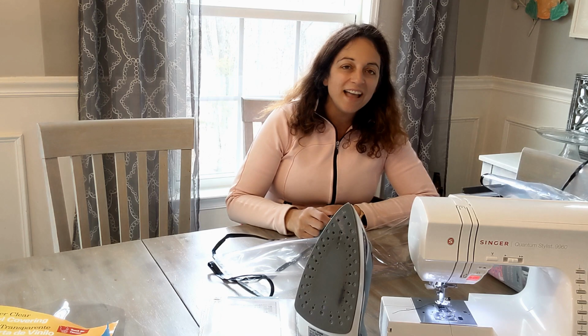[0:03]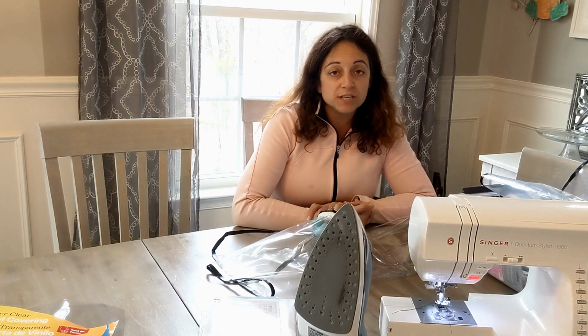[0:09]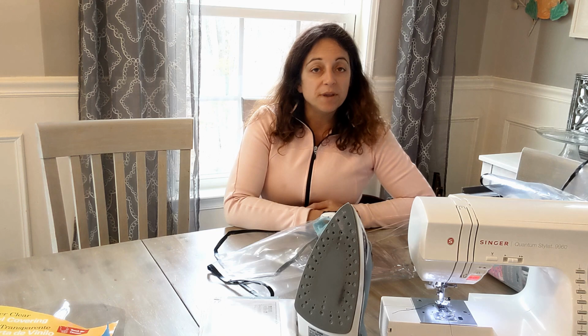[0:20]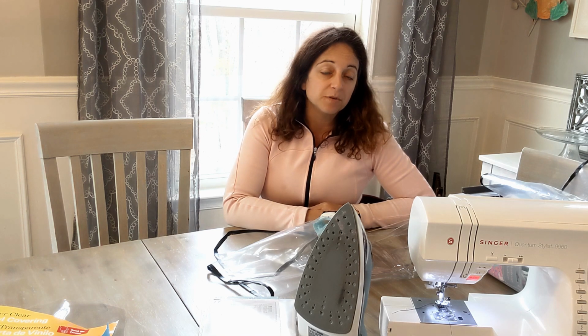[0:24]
Now, I am working on another video about homemade personal protective equipment in general because there is a lot of risk in making gear for people at home. And personal protective equipment is not as simple as just tying a bandana around your face or making a cotton mask to cover your face. It's not so much about how things look, but about how they perform.
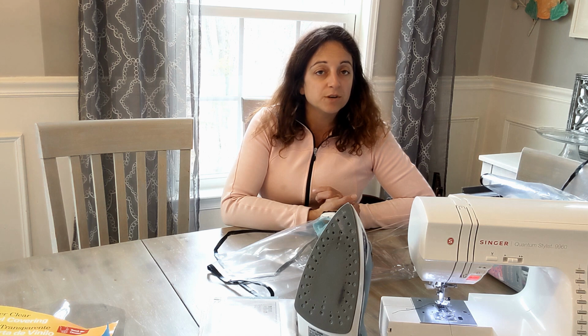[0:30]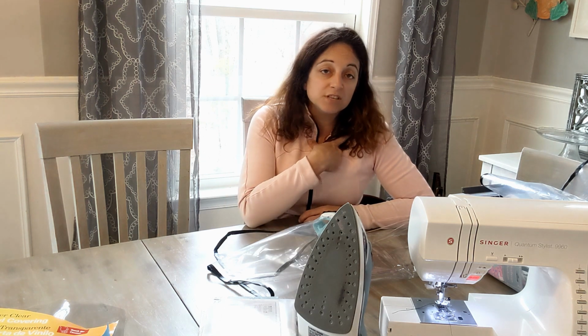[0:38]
So there are so many people with really big hearts who are making tons and tons of materials for healthcare workers and for people affected by the COVID virus. I myself worked for about 8 days trying to make a better designed mask that would actually create a seal around the face. So you can check out my tutorial on that. But I am in no way recommending any of this.
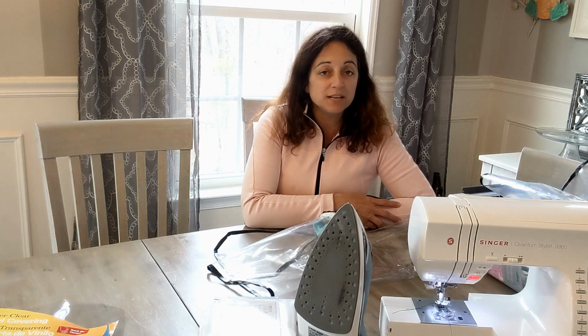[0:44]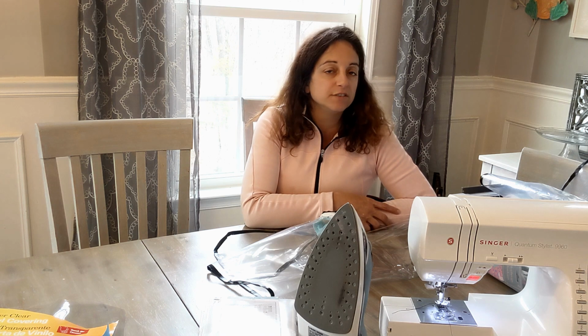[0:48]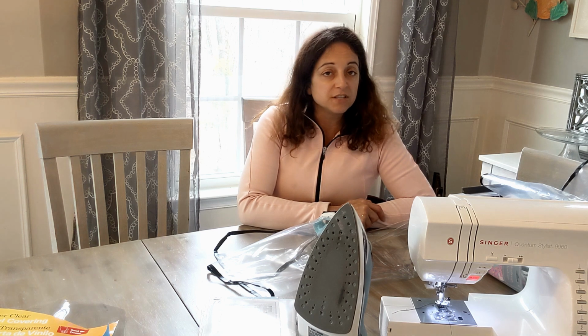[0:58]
As a pediatrician, I am no expert in personal protective equipment. I've worn it, I have never designed it, I don't have a degree in it. There are people who have PhDs in making personal protective gear for healthcare workers. Those are the people who design this equipment. It's made in factories from OSHA compliant materials, and it's really not something that I came up with in my kitchen or in my sewing room.
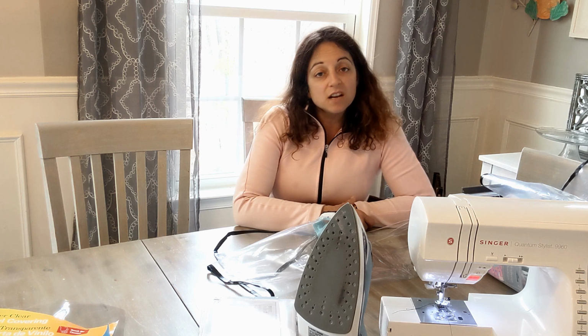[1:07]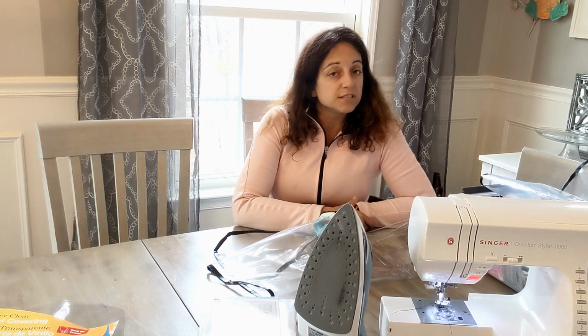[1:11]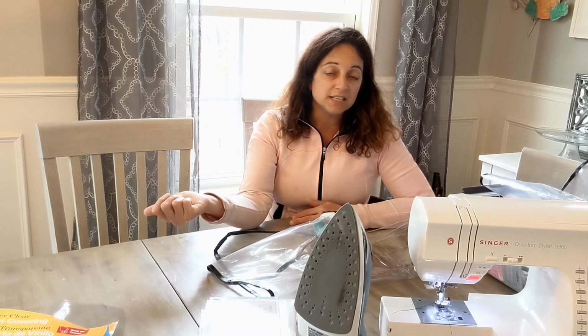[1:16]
So the mask idea was very complicated, and I am not 100% sure it's gonna work. I really have no way of testing it or knowing. I think it's better than what some of the other stuff is that's being made, but I can't say that for sure. In sharing my ideas with you guys, these are just ideas. This is not medical advice.
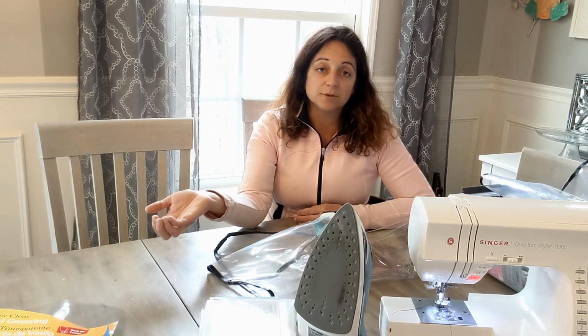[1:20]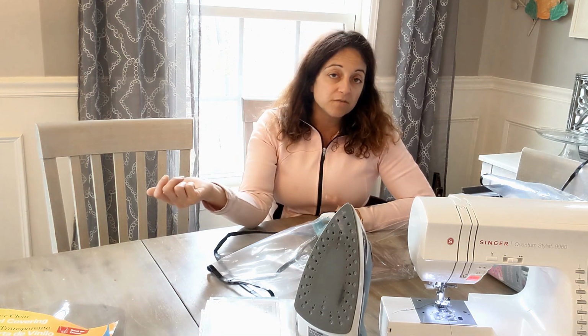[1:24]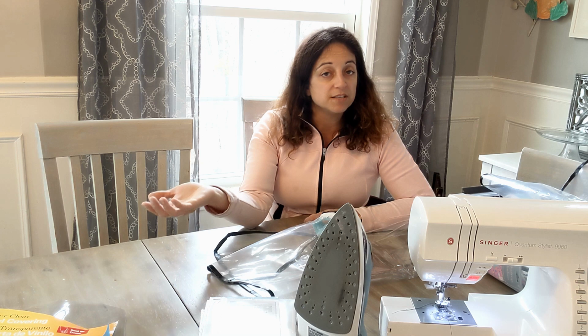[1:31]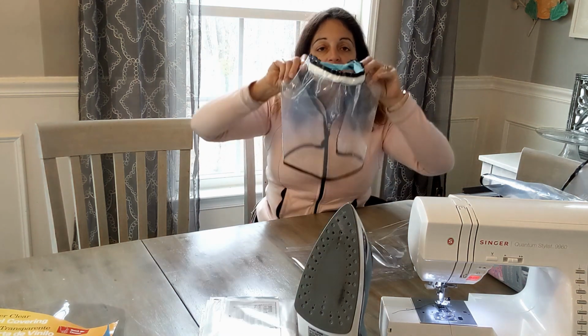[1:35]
I'm not saying this is gonna protect you. I'm not saying this is better than nothing because I don't know. Maybe you're better off with nothing. Who knows? You have to use your own judgment there. But there are people begging for people to make materials, and so I tried to come up with a slightly better design. So what I made here is a face shield.
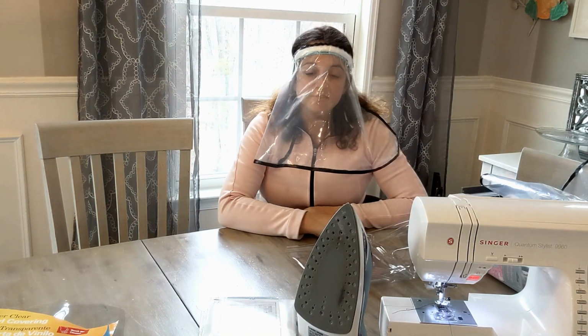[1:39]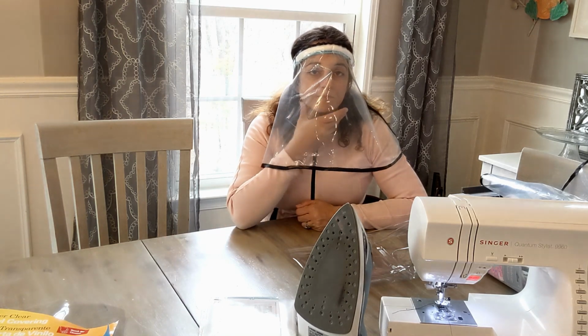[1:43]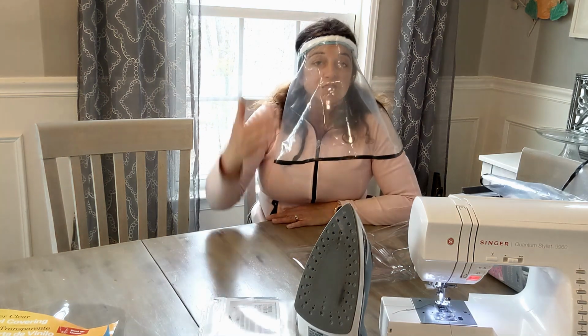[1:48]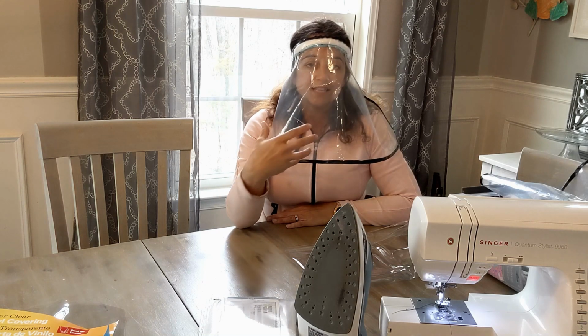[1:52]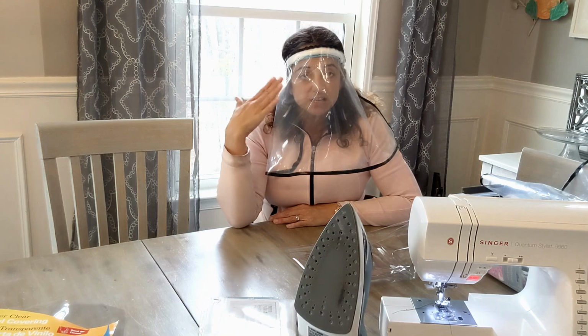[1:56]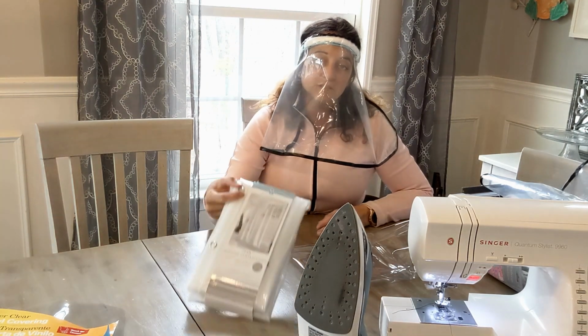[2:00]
The reason I chose to make a face shield is because so many people are making masks, and these masks are fabric, and that basically can act as a sponge and just kind of soak in all those germs. So we need something to block those droplets from the patients from the healthcare worker's face. So hopefully I would have a mask and goggles on underneath this, but this is just gonna add one layer of protection. This one I actually made out of a shower curtain, but I found some other materials.
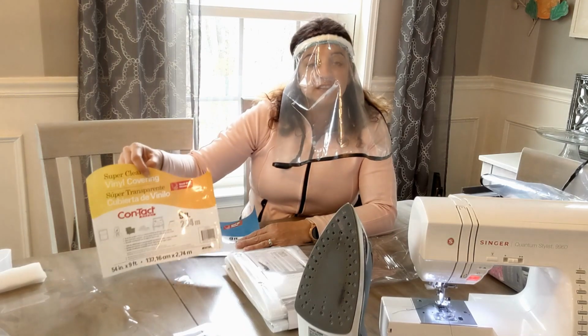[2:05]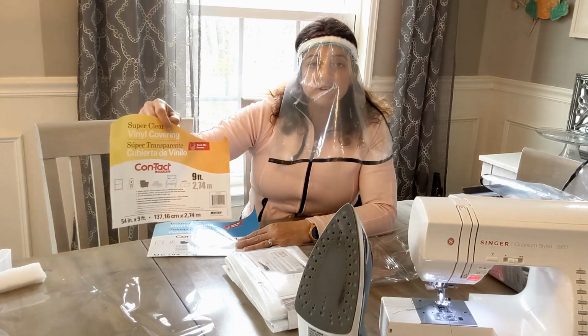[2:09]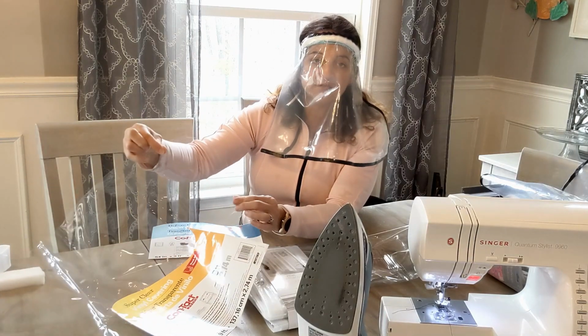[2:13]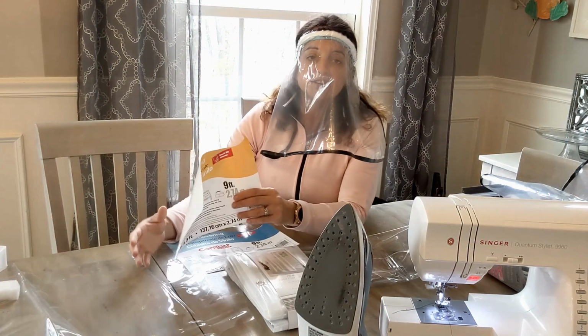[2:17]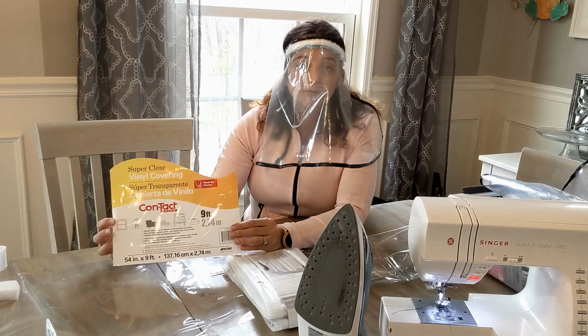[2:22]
So if you have money and the ability to buy whatever you want, this is the product I would buy. I think this is superior. It's a very strong vinyl. There's a sample of it. It's very thick. I can't tear it. I can't really bend it. And it's super clear. I can see everything perfectly through this. And if I use this one, the cost per mask for the vinyl itself is about $1.25 per mask.
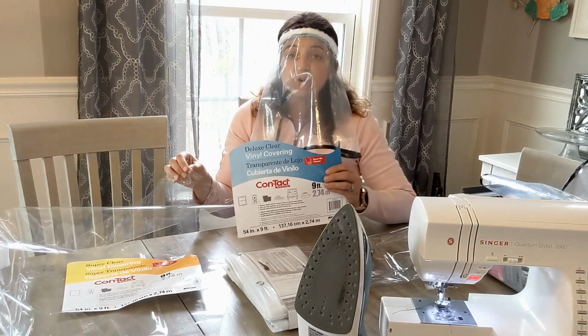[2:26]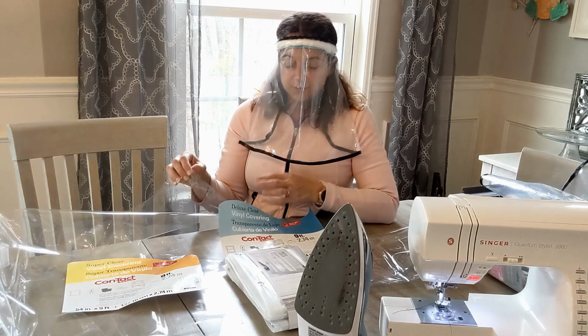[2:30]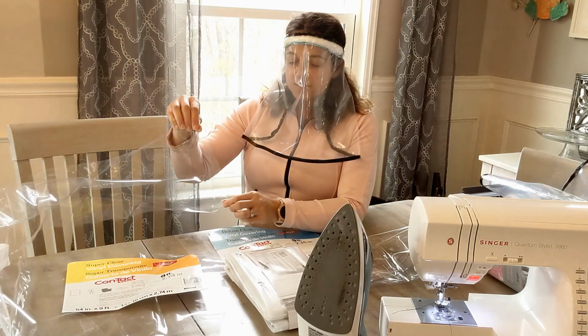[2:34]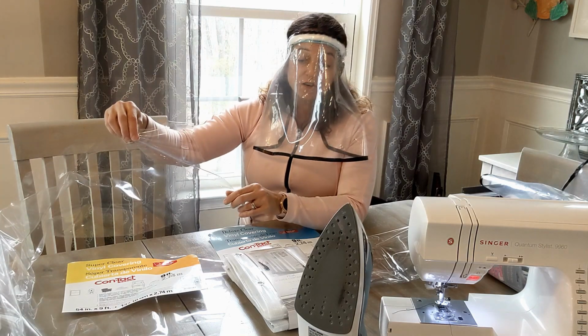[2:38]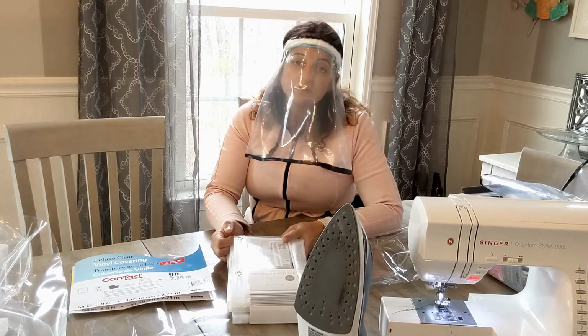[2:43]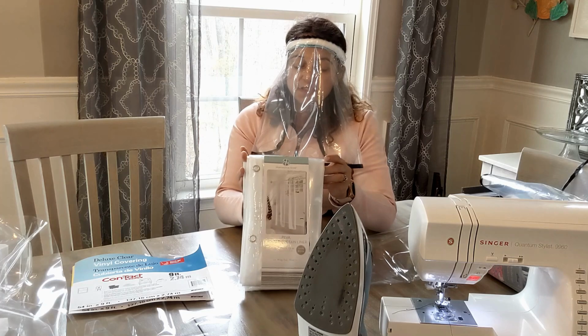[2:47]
Now if I use this one, it's more in line with a heavy duty shower curtain. I still need to put some edging around it to protect the sides. And the cost per mask is about 75 cents per mask in the vinyl. But it's clear, it's strong, and I think it is a very good option. Since we're in a time of social distancing and some mandatory closures, we don't all have access to craft stores or hardware stores. So this is another option.
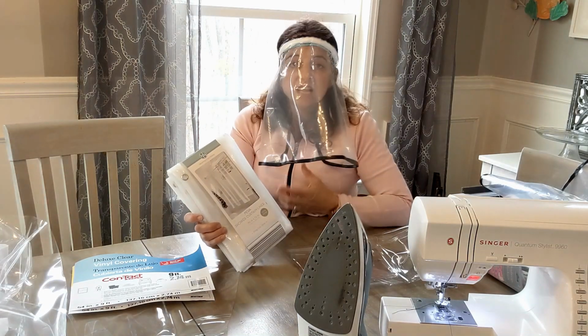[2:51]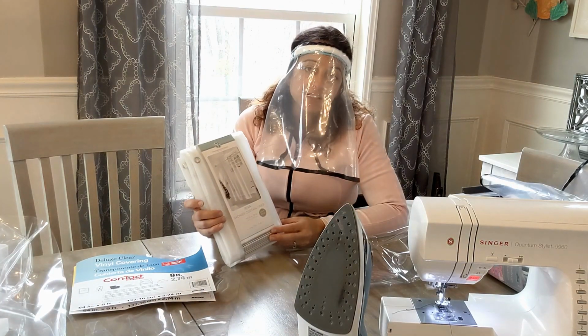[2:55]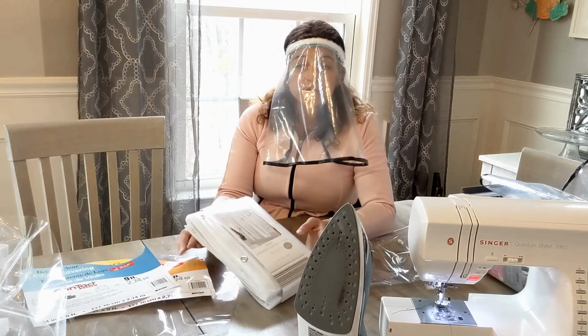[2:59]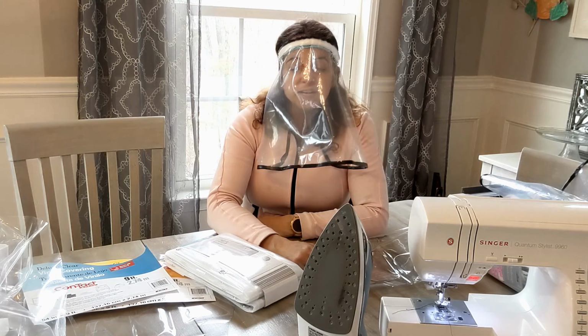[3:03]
This is a shower curtain. That's what this one is made out of. It's still pretty strong. It's still pretty clear. It is a tiny bit cloudier because obviously shower curtains are designed to give you a little bit of privacy. So I can still see well. I can read the words on this iron here, but it's not as crystal clear as the super clear vinyl is over here.
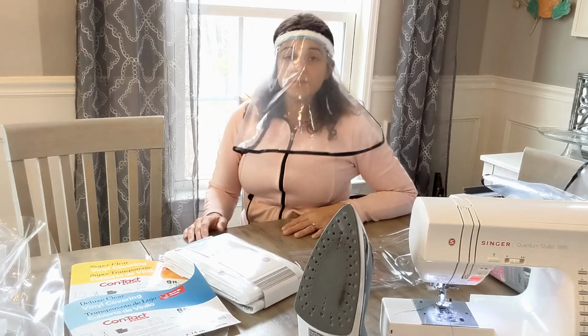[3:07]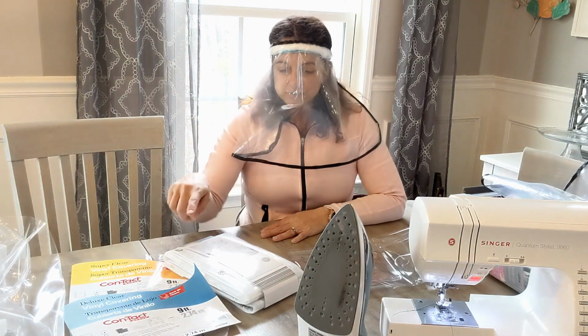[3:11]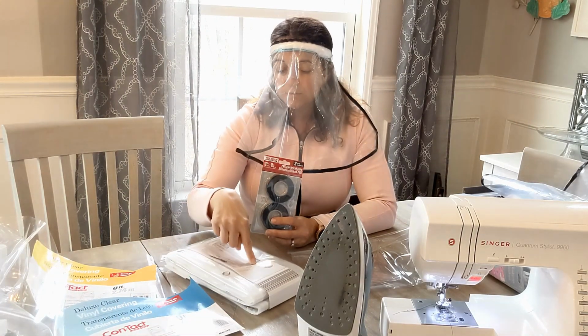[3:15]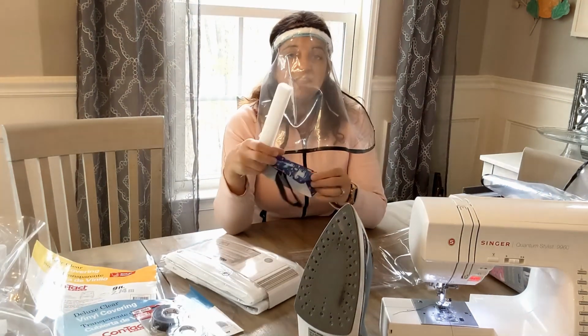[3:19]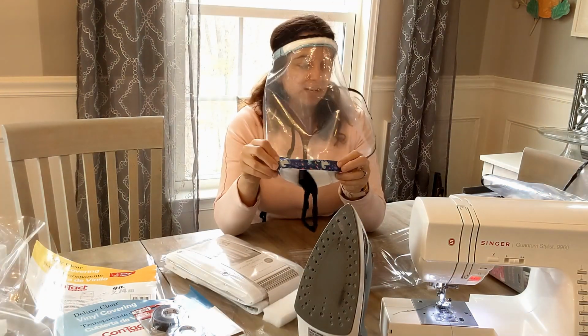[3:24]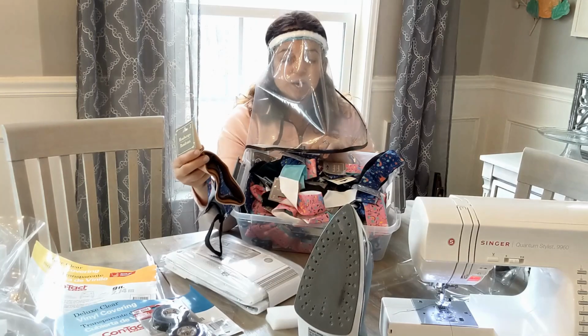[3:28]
So if you're interested in making these face shields, all you really need are one source of vinyl. If you're not using this yellow one and you either are using the blue one or a shower curtain, you're going to need some electrical tape and an iron. And then you also need a piece of craft foam and a headband. I got these at the dollar store. There were a lot of color options, as you can see.
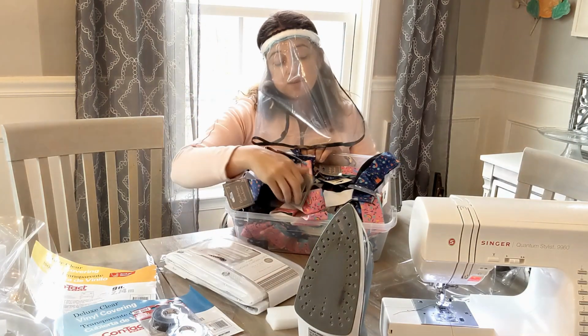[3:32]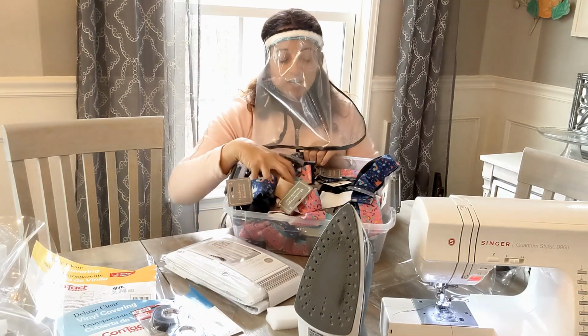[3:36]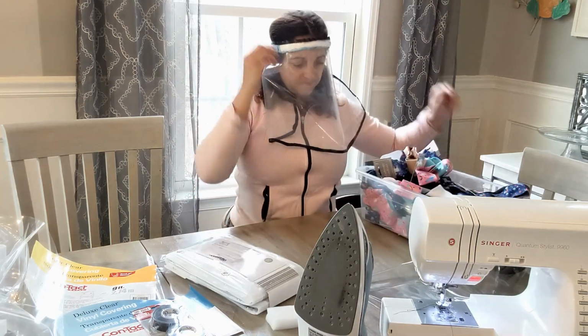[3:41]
Sometimes they came in a 3-pack, sometimes they come in a 2-pack. Sometimes they have unicorns and rainbows on them. It doesn't really matter. The function is what's important. So I was able to buy all these, and I'm going to turn them into our headband.
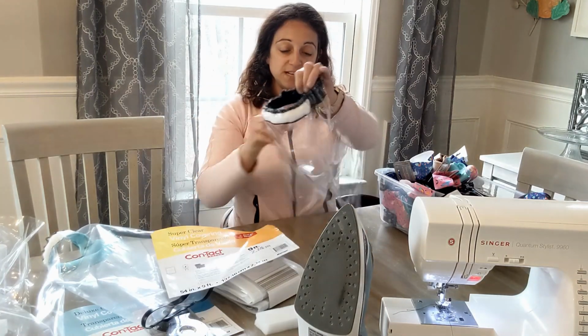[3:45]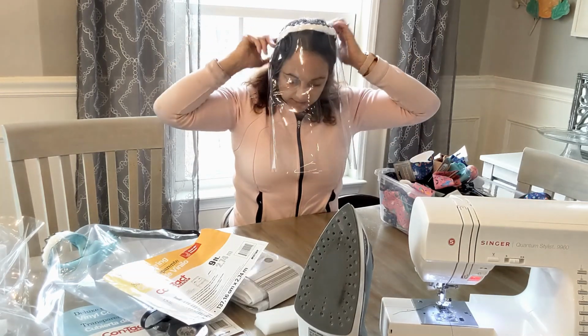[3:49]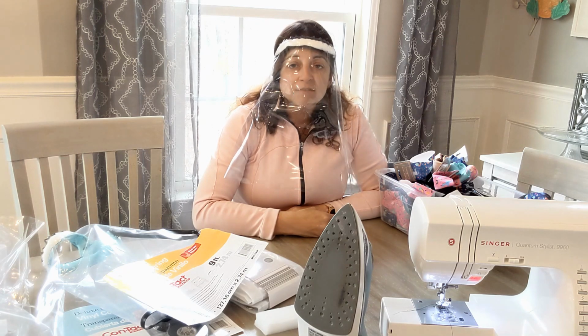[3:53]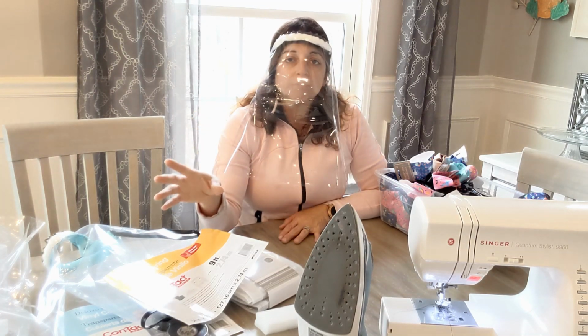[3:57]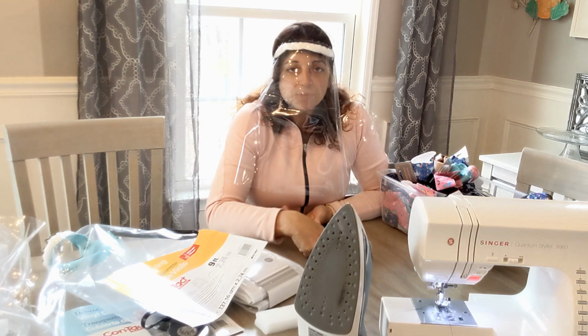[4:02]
Now if you want to use the yellow super clear, this is one that I made out of that, and I did not have to put the edging around, which was nice. And as you can see, very clear, very comfortable. I can see all the way across the room. I can read the calendar on the wall over there, no problem. I would say this is definitely a superior material, but like I said, we're not supposed to be going out to stores, so you may need to work with what you can get.
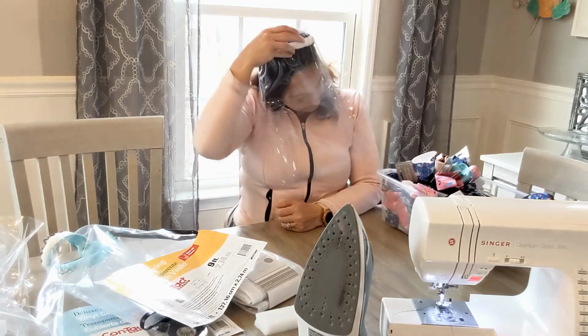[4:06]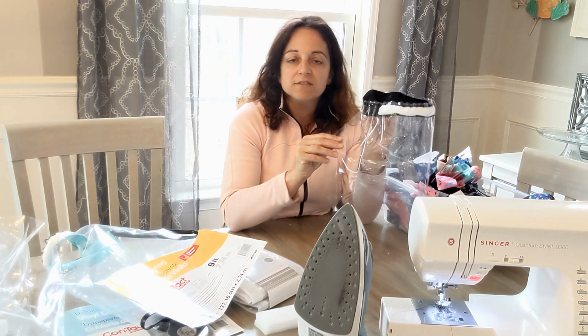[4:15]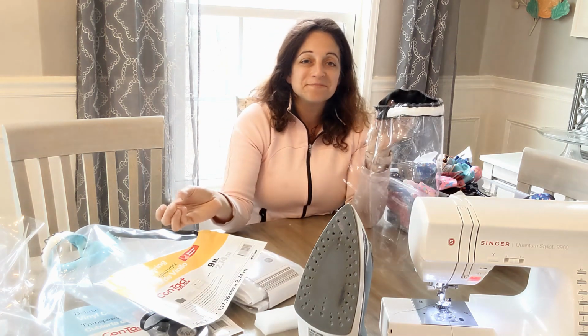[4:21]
One more thing before we get started, I'm home alone with 4 kids, 7 and under. My husband's at church right now doing the camera work so we can have online services. So that means I have a lot of noise in the background. I keep trying to get them to be quiet. I'll do my best to edit out any noise or guest appearances. I have a 10-year-old neighbor who loves to give me life hacks, and the other day she told me, "Miss Lily, here's a life hack, don't have so many kids." I love each and every one of my children. I wouldn't trade them for the world, but they are making this tutorial a little more complicated.
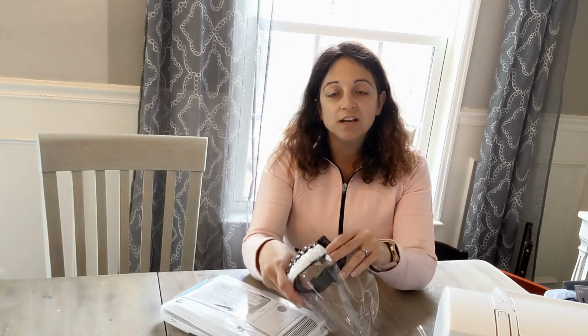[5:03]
But since you're going to be making these face shields at home, you probably have some kids running around too. And again, for the purposes of this tutorial, consider me just a mom with an idea. This is not medical advice. This is not something I'm saying is definitely going to work or protect anybody. All I know is we need some way to shield the face, and I think this might be an okay idea. But again, it's a work in progress. I'd love your feedback. I'd love your thoughts. Really don't want to be sued. I don't have a lot of money anyway. I only work 1 day a week. So I'm telling you, you're making this at your own risk and you are wearing this at your own risk. I have no idea if it's going to work. It's just an idea. And I would love your collaboration for design improvement on it as well.
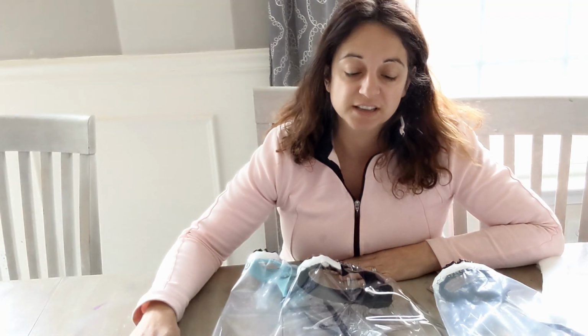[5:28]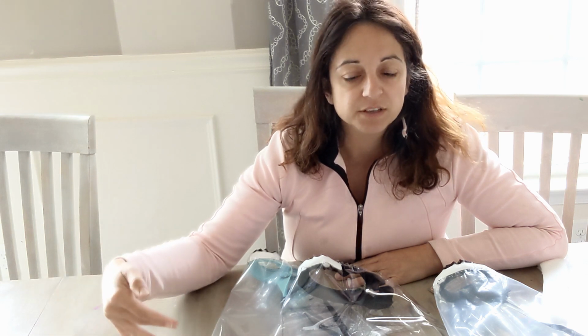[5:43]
Okay, just a couple more thoughts on this. One, I know this is a very long video, and the reason for that is because I really wanted to save you time on all the mistakes that I made, all the things that I figured out in doing this. We're not living in a time where you can just run out to the store anytime you want. You're probably going to have to order supplies online. So I want to help you out by showing you the difference between some of the materials so that you don't waste time or money the way I did in trying to figure out what works or what doesn't. The basic idea of this mask is a piece of vinyl, a piece of foam inside, and a headband. It doesn't seem like watching a 29-minute tutorial on how to do that would be worth your time, but it actually may save you a lot of time and money. So that's why I chose to show it to you in the detail level that I did.
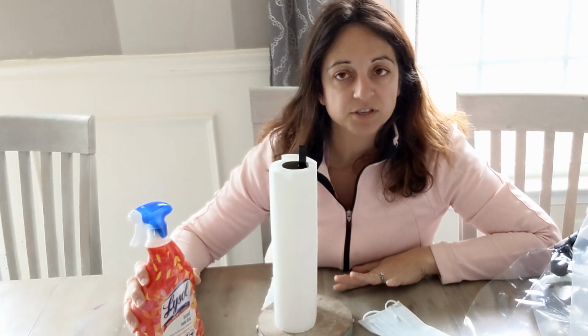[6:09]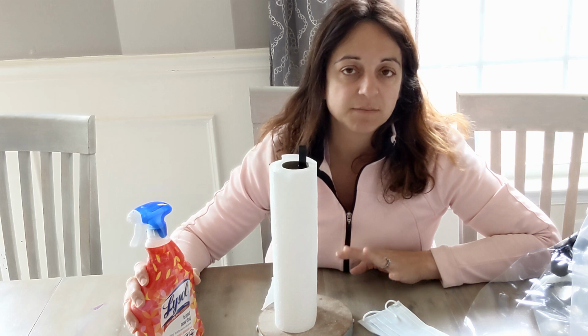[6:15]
Another thing that's important, you want to clean all your surfaces before you start to work. Because of the kids, I had to work upstairs on the bedroom floor. In my mask video, I had a lot of people criticizing me for working on the floor, but wood is wood, you can clean it. So just make sure you clean your surfaces. Also, in the first COVID-19 video that I did, I said that we should all just act as if we already have coronavirus.
So what that means is I think you should wear a mask while you're working. I did not do this in the video because it makes my voice very muffled, but wash your hands, clean your surfaces, wear a mask so you're not coughing and breathing on all your materials while you're working on stuff for other people.
And finally, even though I really don't like the idea of homemade personal protective equipment, I have seen some really awesome ideas and some innovation here. A lot of people are making these on 3D printers, not this model. Now, making one on a 3D printer, from what I've heard, costs about $1 or $2. So the cost is pretty comparable, but it does take about an hour and a half to print each one.
If you have a 3D printer, that's awesome, do it. But if you assembly line your work, especially if you go with the super clear vinyl where you don't have to do the binding on it, you could make your mask in a lot less time, and you may be more efficient than the 3D printers. But if you have a 3D printer, I would probably go that route.
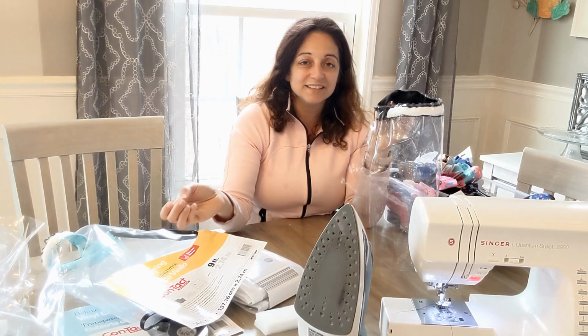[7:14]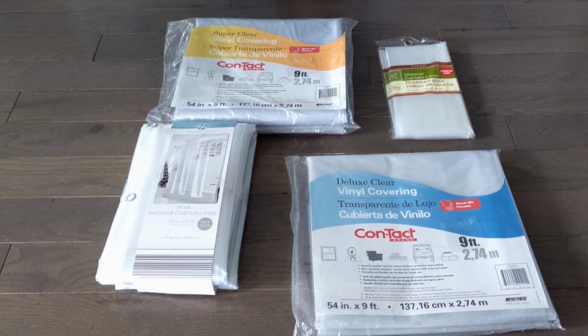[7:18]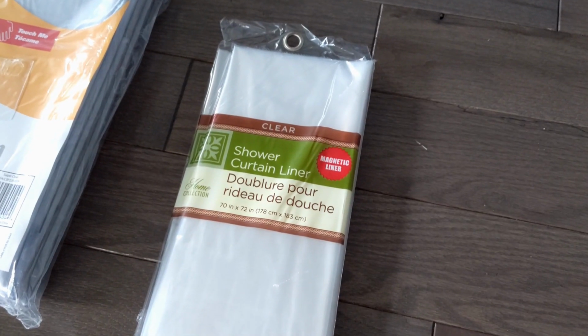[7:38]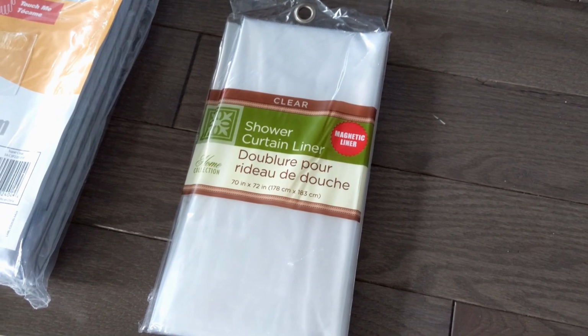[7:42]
Let's get started. Step 1, choose your vinyl materials. Okay, so right now what we're going to talk about are potential materials for our vinyl portion of the face shield. So we do not want to be out and about going through stores and figuring things out. So these are the 4 options I came up with, and I want to go over them with you so that if you have access to order them or you might have some of this at home, you can go ahead and use it. This is a shower curtain I got at the Dollar Tree, and it is not a very good option. Let me show you why.
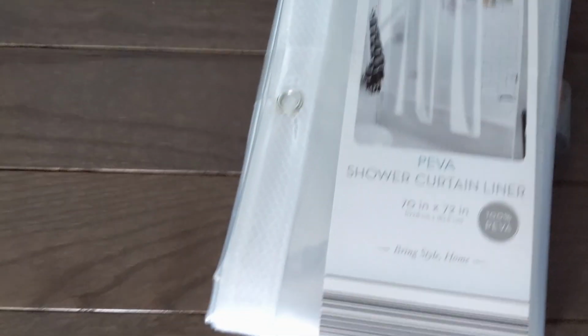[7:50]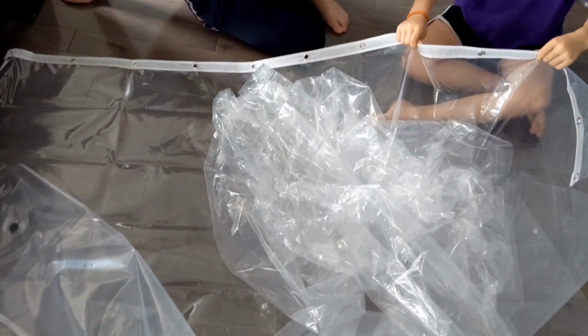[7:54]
If this is all you have available, this would have to be a single-use type of thing. You can see the material is really, really thin here. So this is a heavy-duty shower curtain liner. So comparing it to the dollar store one, the dollar store one looks basically like a plastic bag comparatively. This one is much thicker. This is kind of what I've used in my prototypes.
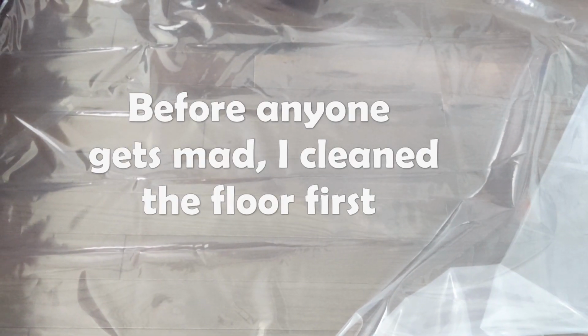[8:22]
Now, it's not the clearest. You can still see the grain in the wood, but there is a little bit of issue with glare. So when you're working with this, you have to make sure that you don't have any wrinkles at all in your shield, or else the healthcare worker who's wearing it will not be able to see. It is strong. I think it would last for multiple uses, and it's a pretty good option, especially when it's hard to get supplies right now.
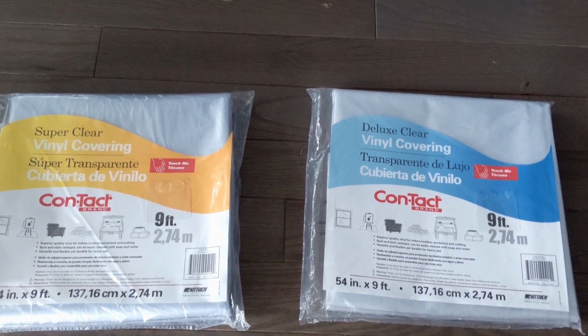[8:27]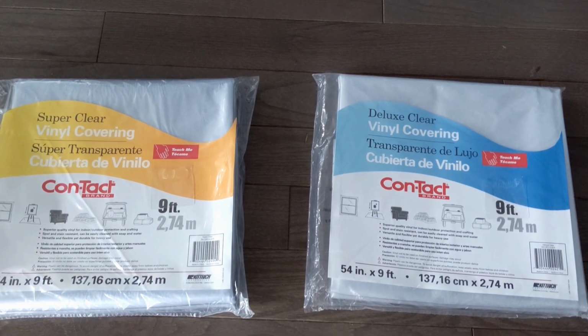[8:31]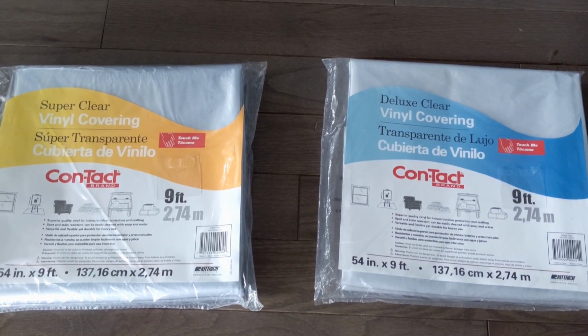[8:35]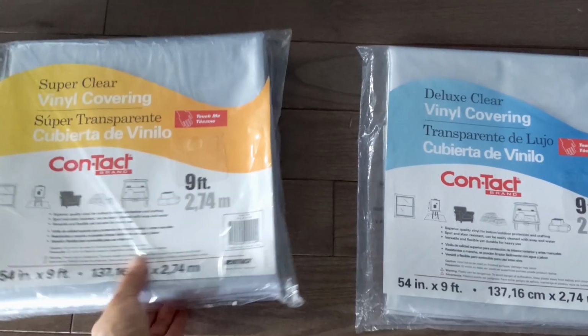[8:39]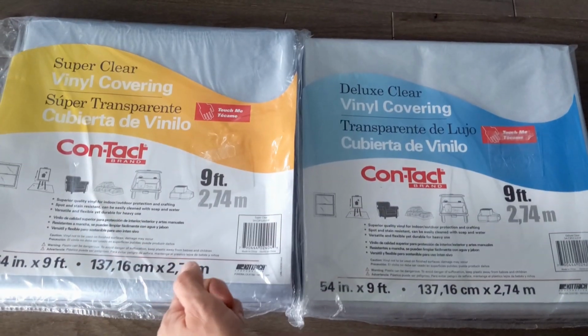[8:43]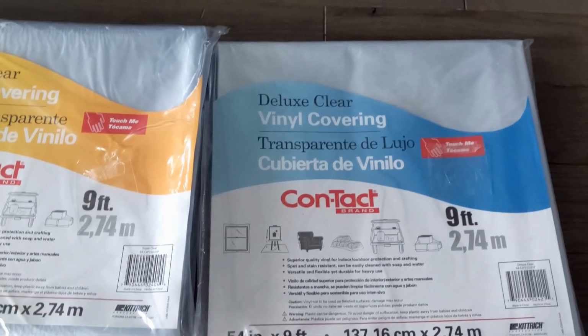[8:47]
So these 2 are options for vinyl that I was able to get at Walmart. They had vinyl that was on the spools, but what they had in the one in my local store was very thin, and I thought it would be about the level, a little bit higher than the dollar store one. These seemed like they were good, thick vinyl. This one on the left is super clear. It's heavy duty. It's much thicker. And this one on the right is called Deluxe Clear, and it is a little bit thinner, but it's actually still pretty good.
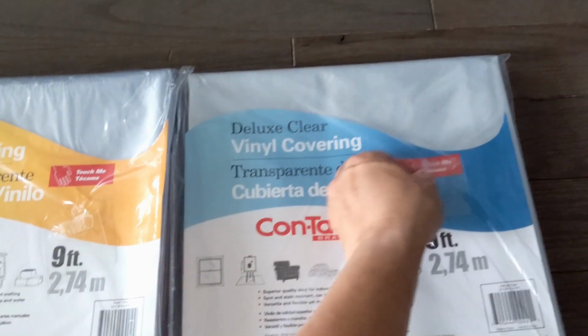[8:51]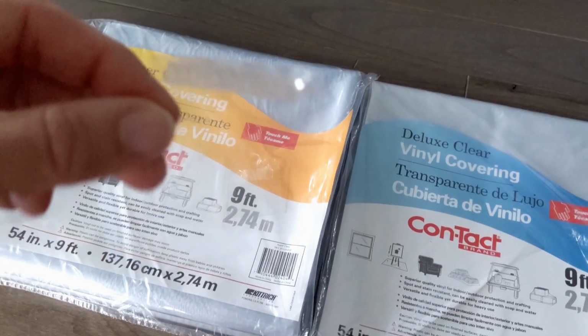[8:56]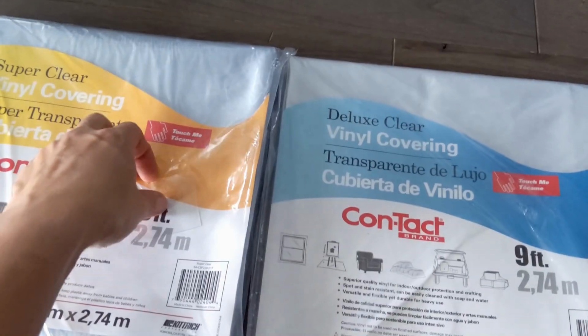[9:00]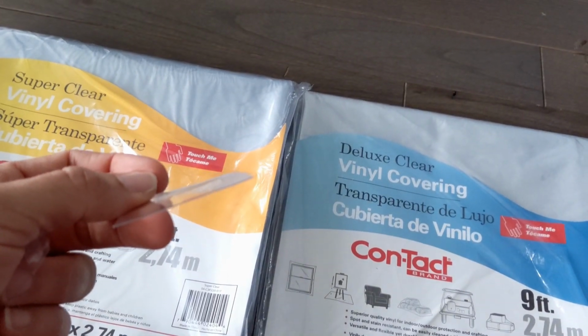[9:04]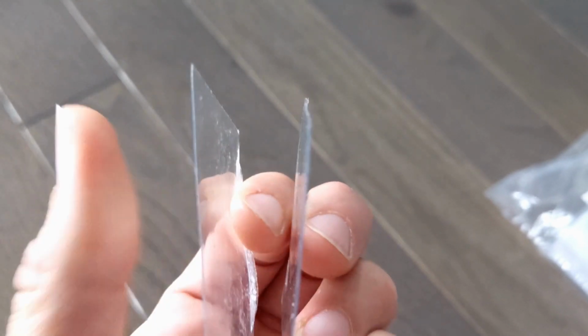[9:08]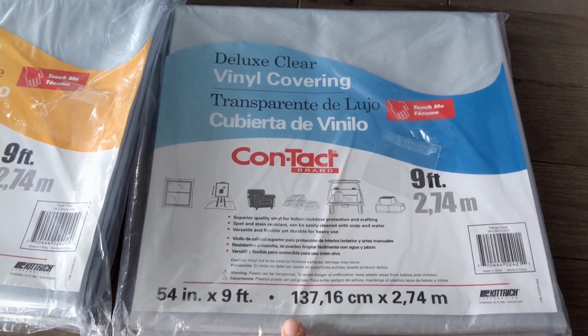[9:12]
So there was a sample on the outside of it. You can see it's still very easy to see through it. It's not super thick, and the super clear one, you can tell, is much thicker. You can tell there's definitely a difference in thickness. This side's the blue side. This one was about $15, and this one was about $9.
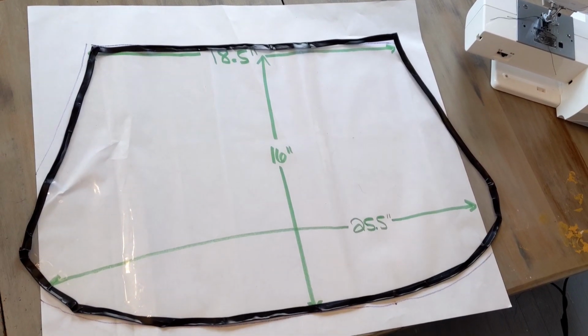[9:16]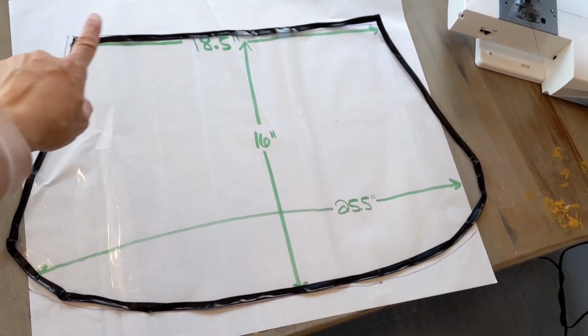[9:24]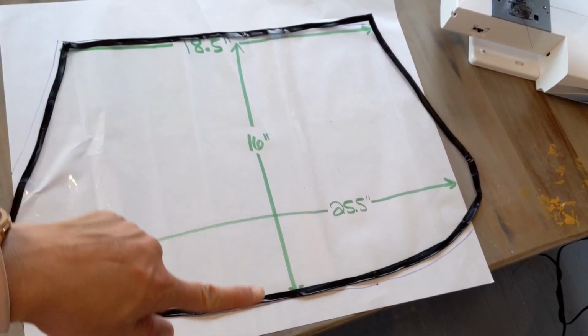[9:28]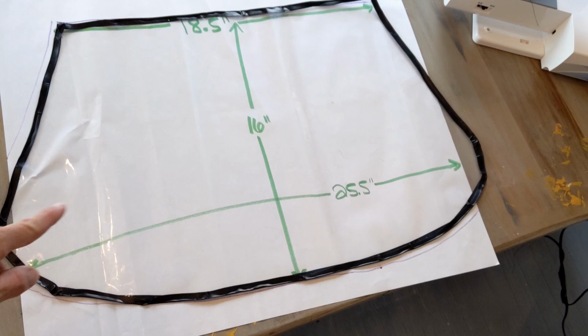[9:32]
Step 2, cut your vinyl. Okay, so I don't really have a downloadable template or anything for you guys because this is so big, there's probably nobody who has a printer who could print something off that size. From left to right is 18.5 inches. From top to bottom is 16 inches. And across from the widest part, side to side, is 25.5 inches.
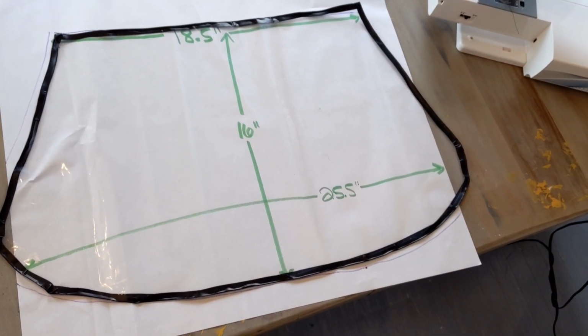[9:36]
These measurements do not have to be exactly like this, and this is not something standard. This is just something I'm kind of making up as I go. I kind of have a big head, so the 18.5 works well for me. This mask should definitely cover everybody's face. So if it's a little bigger, a little smaller, it's not that big of a deal as long as it's going to stay on people's heads.
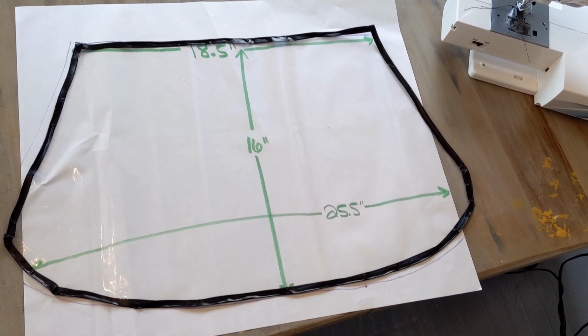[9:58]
That's all we really need. I would suggest just taking a piece, measuring out the first one. You kind of want this boat shape at the bottom so that it rests comfortably against your shoulders and isn't sticking out on the sides.
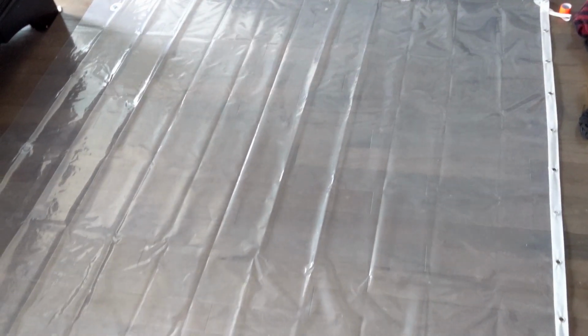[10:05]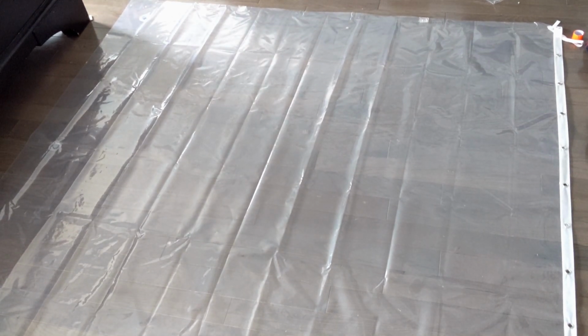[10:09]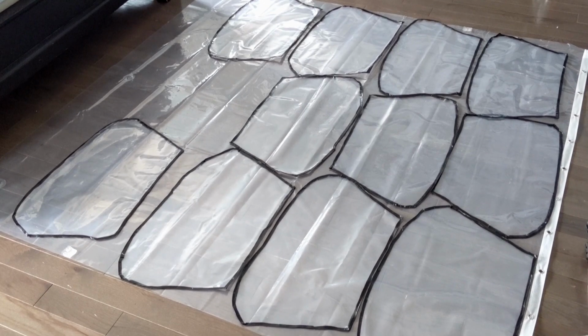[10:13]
So I've laid out our shower curtain, and I'm going to put some of the ones that I've already done on there so you can get an idea of how you could lay out your cutting pattern. I only had 11 to put on there, but looking at this, you can see that we can easily get 12 shields out of a single shower curtain.
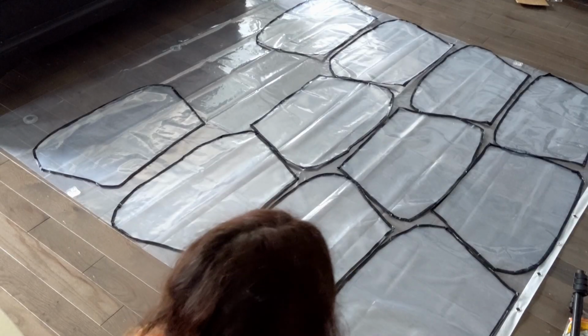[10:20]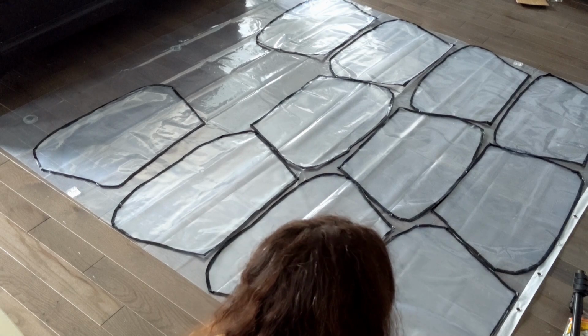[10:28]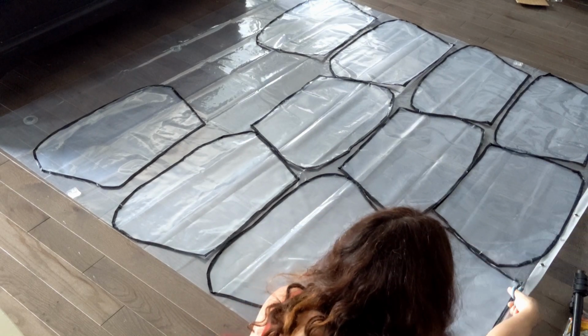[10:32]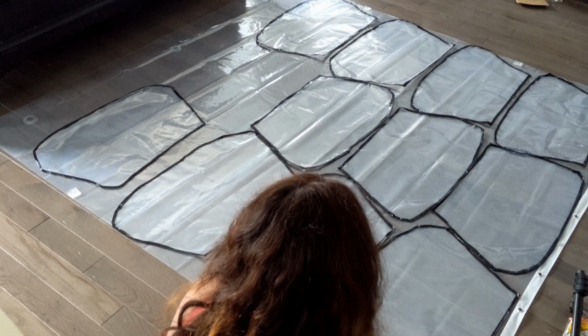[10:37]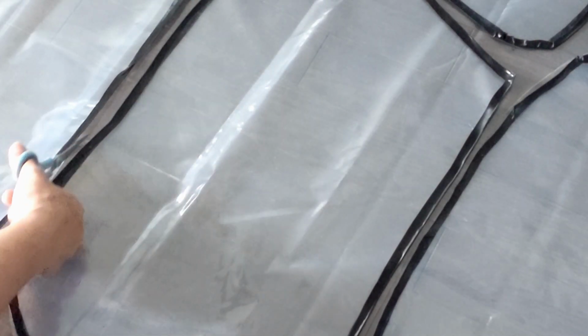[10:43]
You don't need anything special. I'm just taking some regular scissors here. One of the most important things about cutting is that you just glide your scissors in a smooth line, because you don't want any rough edges. That becomes a lot harder to work with when you move on to your next step, where you're putting the electrical tape on. I just slide into my vinyl in a smooth glide.
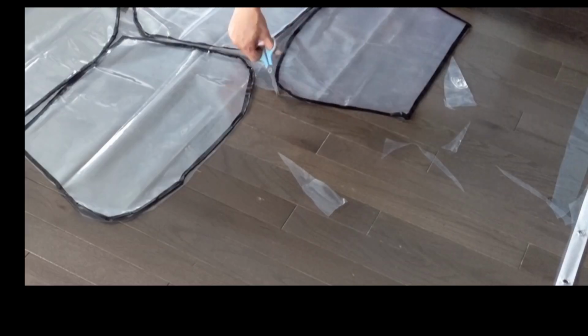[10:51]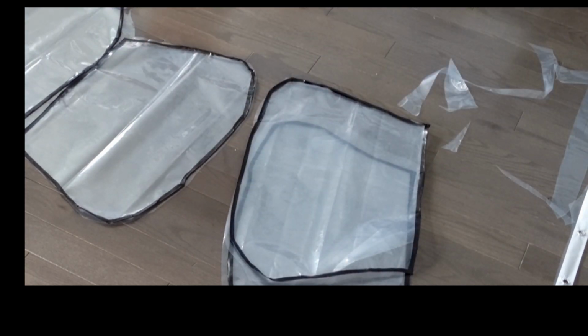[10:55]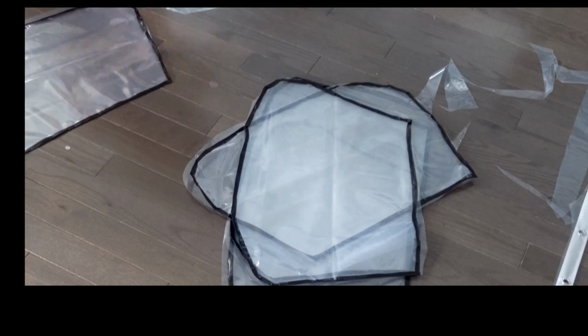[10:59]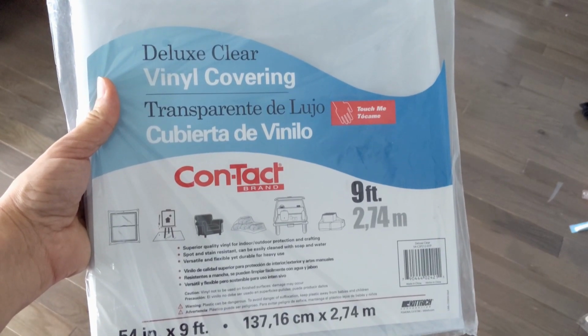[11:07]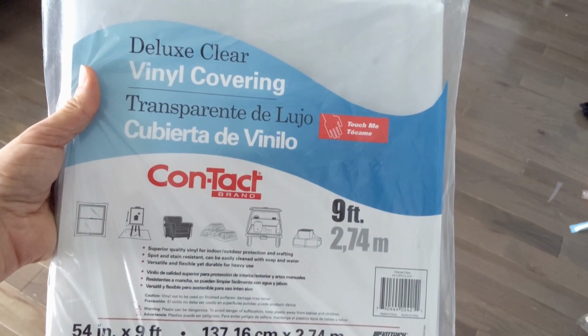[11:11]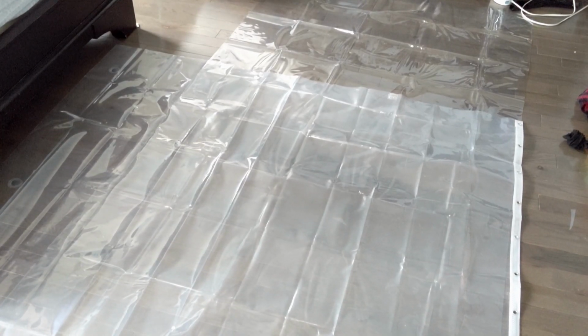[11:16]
Okay, so we have 12 shields made out of a single $6 shower curtain. Now we're going to try this again, but we're going to use our 9-foot deluxe clear vinyl covering. I put the shower curtain on top of it. The shower curtain is a little bit longer lengthwise: the shower curtain is 72, this is 54, but widthwise the shower curtain is 70 and this is 108.
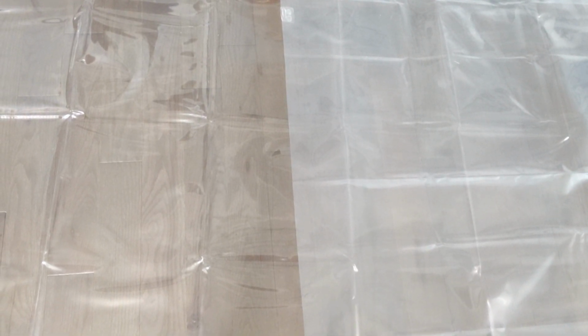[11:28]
Looking here, you can tell the shower curtain is definitely a little more opaque. This vinyl is about the same level of thickness as the shower curtain. A single layer of shower curtain is a single layer of vinyl. The vinyl is a lot clearer. This was my blue level, which means it was $9. So for $9, you're actually getting more material, and it's a better quality material. I think this would be the way to go.
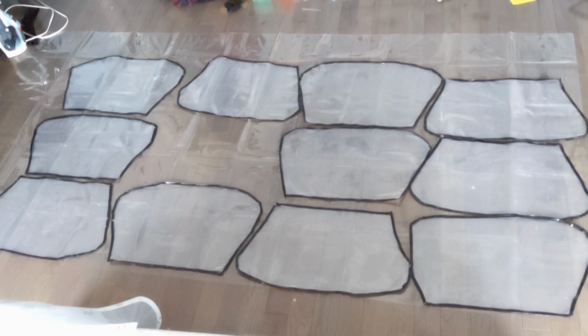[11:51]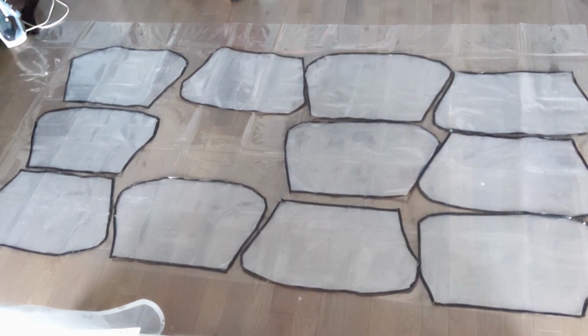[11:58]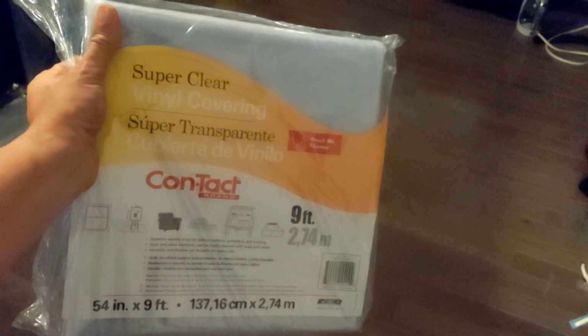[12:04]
As you can see, even though the dimensions are a little bit different, I'm still able to get 12 shields out of a single piece. So dollar for dollar, I think I'd go for the clear vinyl blue level if you had the choice. Now we're going to try the super clear.
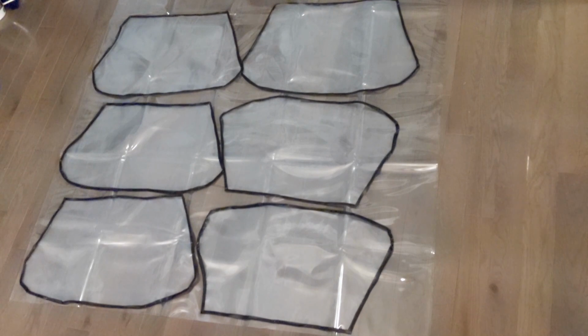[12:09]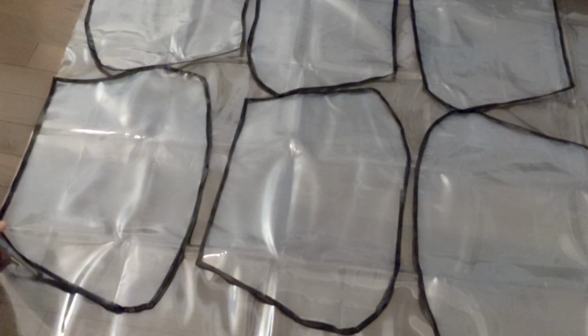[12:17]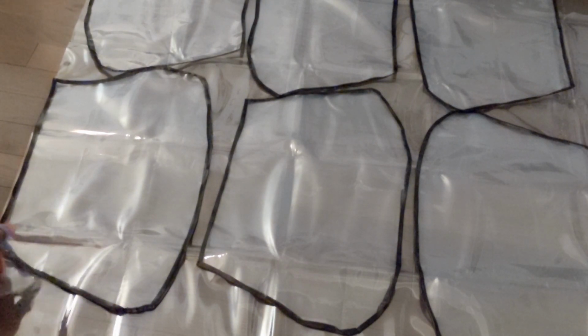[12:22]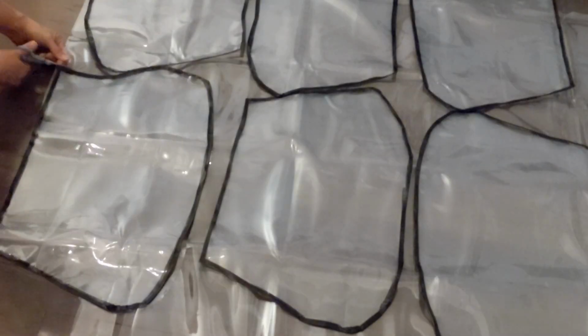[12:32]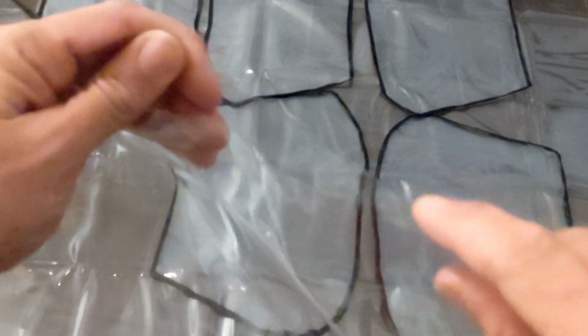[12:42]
The other thing I decided to experiment with here is, since it comes so nicely folded in half, I'm going to see if I can cut through 2 layers at once and cut down on my cutting time. It's definitely hard. All right, let me just try 1 layer then. If you have really nice scissors, maybe you can do 2. I could not do 2 here. This is very thick and very nice and very clear. We're looking right through it now. I wonder if it's thick enough that you wouldn't need to put a binding on the edge.
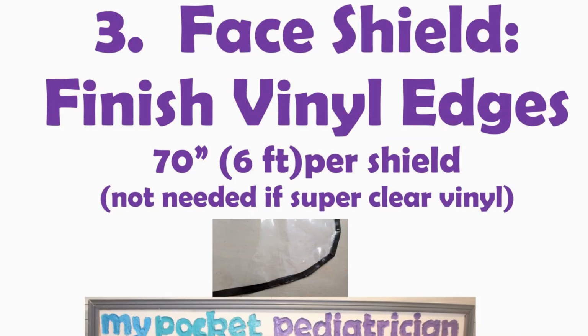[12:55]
The reason that I have that black stuff around the edges is because these are going to be beat up a bit when they're in use. People are going to be wearing them. They're going to be intubating patients. Step 3, finish the edges of the vinyl. This is not necessary if you're using the super clear vinyl yellow package.
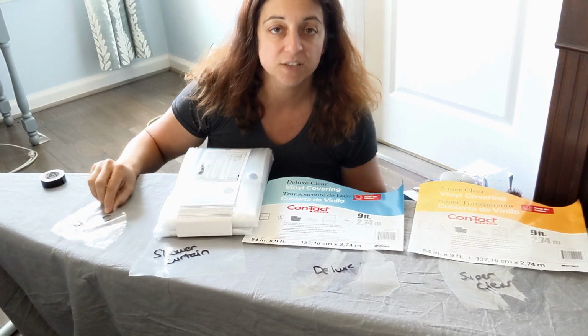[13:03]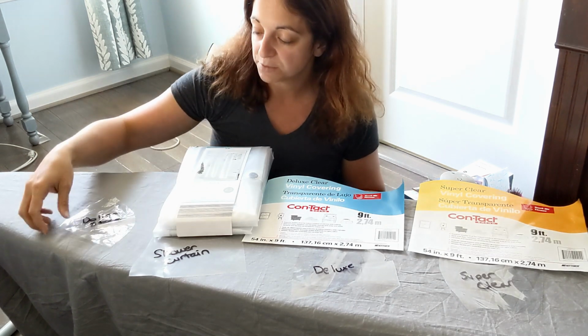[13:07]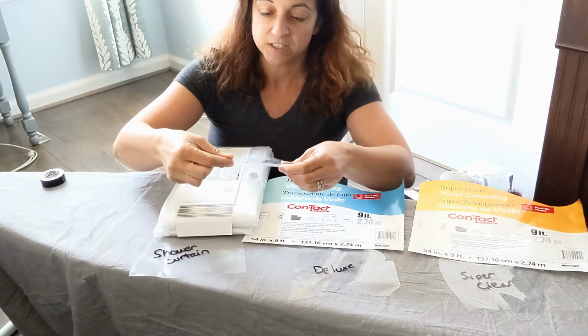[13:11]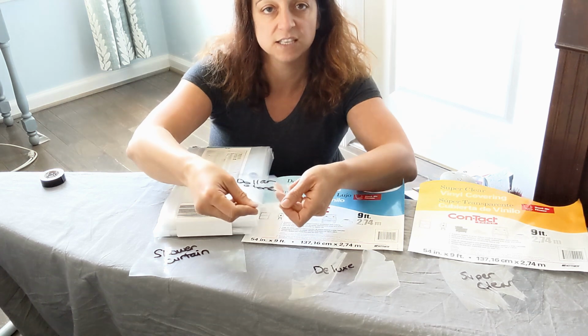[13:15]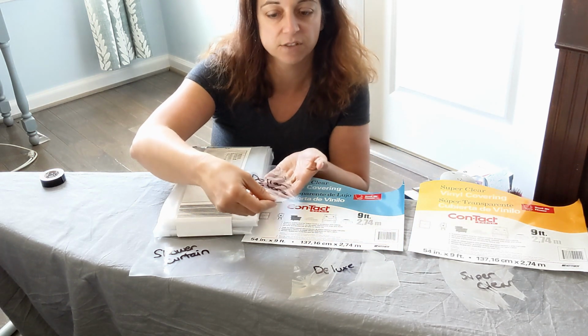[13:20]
Okay, so we're moving on to our next step. I have my iron preheating and we're going to put our binding around the edges. But what I want to do is show you something important so you can see the difference between your quality. I took each of these and made a small cut in each one so you can compare how strongly they're going to hold up and see the importance of the binding.
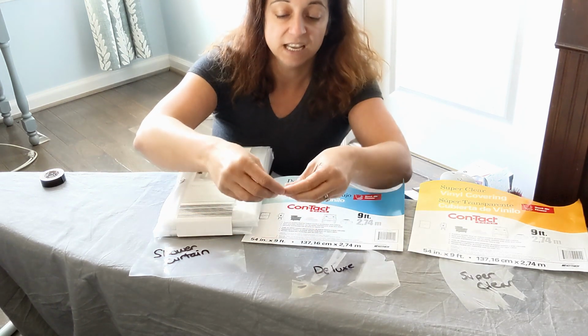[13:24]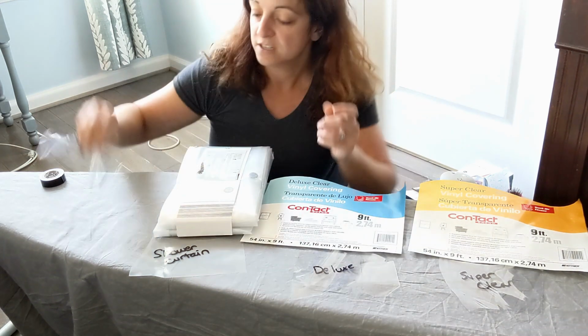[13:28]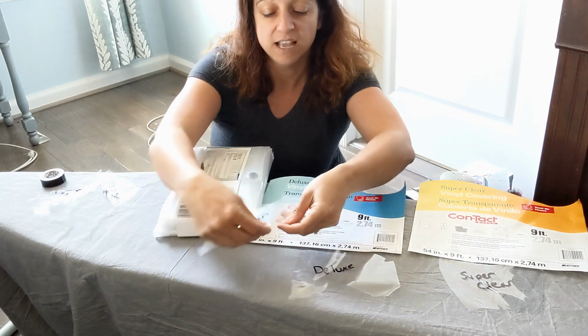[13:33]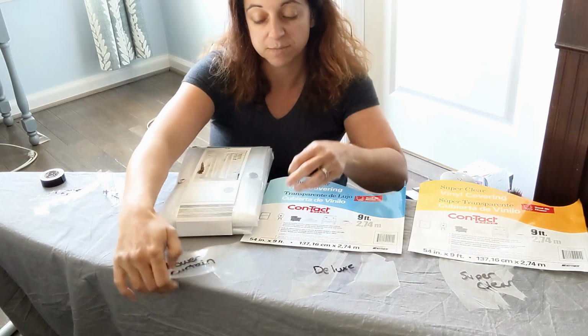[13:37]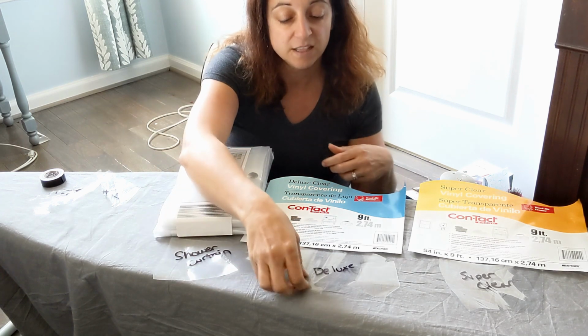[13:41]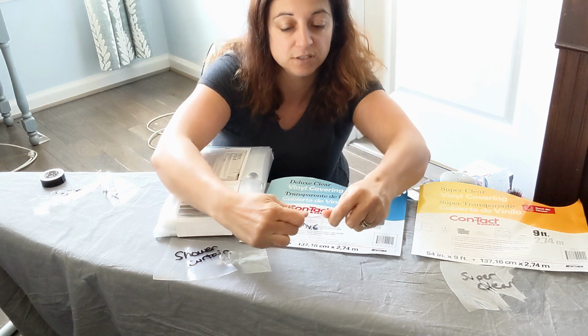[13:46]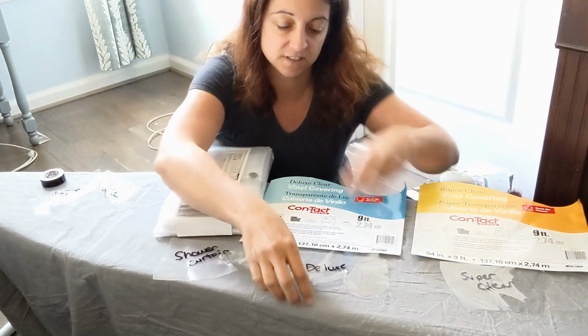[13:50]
This is the dollar store one. Like I said, I wouldn't even waste my time with this. If I make a small cut here, it tears right apart, completely useless. This is the shower curtain, so I have the same 1-inch cut, and when I pull on it, I have to pull a lot harder, but it is very possible for me to tear it, so we definitely need some binding around the shower curtain. This is my deluxe vinyl, same cut, and when I pull, I have to pull pretty hard, but I am able to tear it apart, so this one is still going to need some binding.
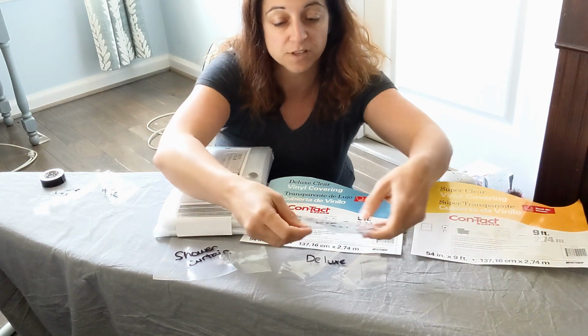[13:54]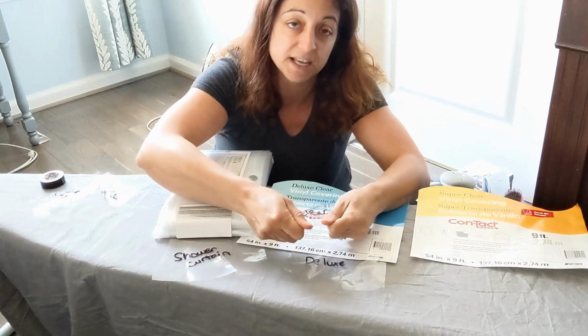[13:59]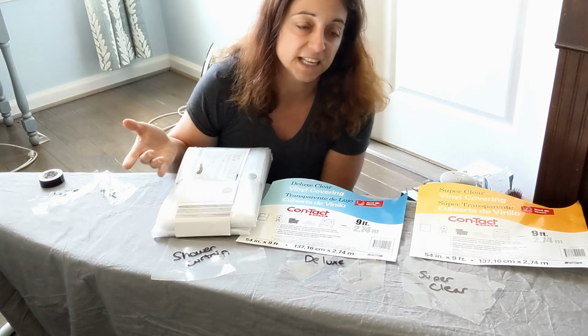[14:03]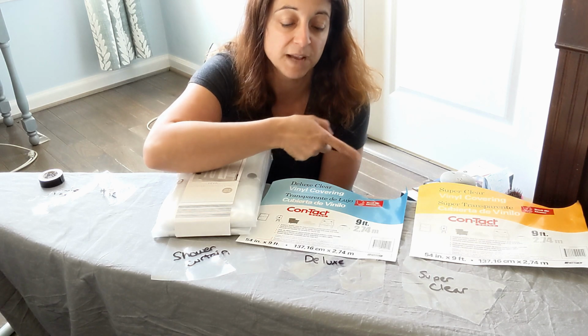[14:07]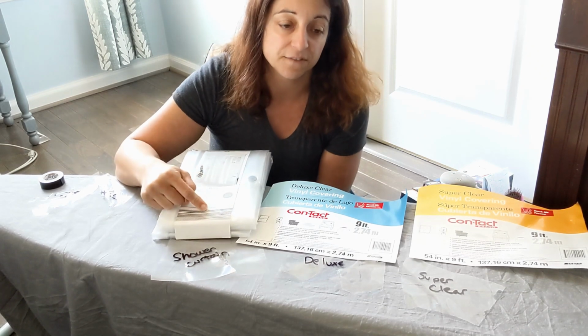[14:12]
Now this is the super clear, again same cut, and no matter how hard I'm pulling, I can't rip it. So this one does not need the binding. So if you have more money than time, I would definitely go for the super clear. Like I said, that's about $1.25 per mask. This is about 75 cents per mask, and I got this for $6, so it's about 50 cents per mask.
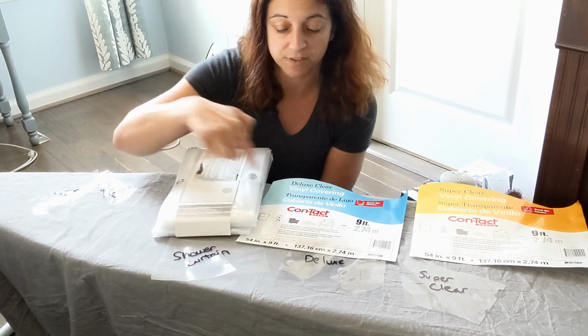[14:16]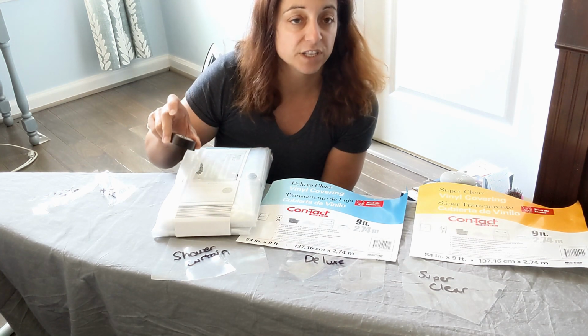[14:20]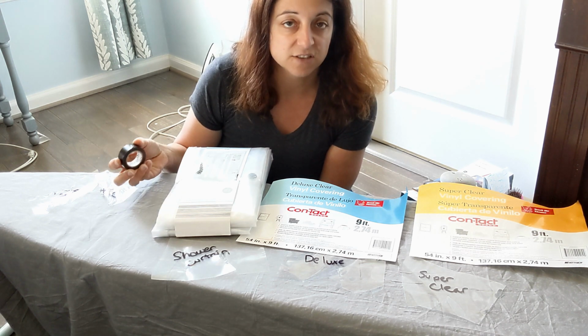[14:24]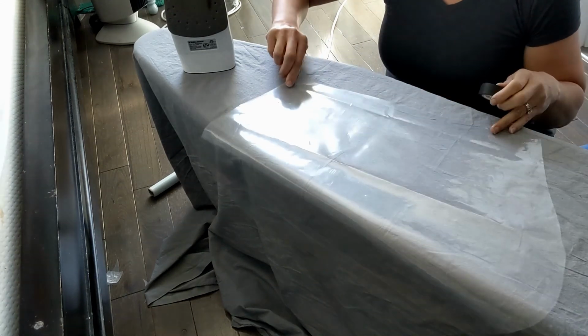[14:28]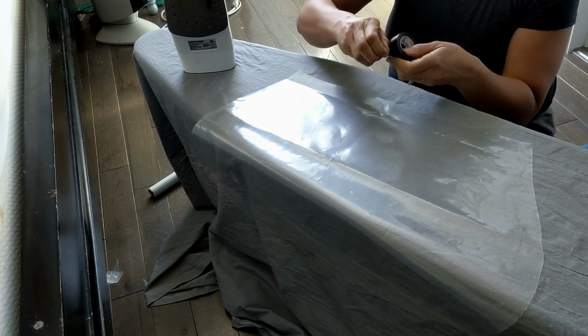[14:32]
But I'm gonna have to spend some time putting binding around my edges on both of these 2 options. And I need about 70 inches of electric tape for each one. Now electric tape is cheap, I can get that at the dollar store, but it does take a certain amount of time to put it on. Okay, so moving on to our binding phase, we need about 70 inches or almost 6 feet of electric tape.
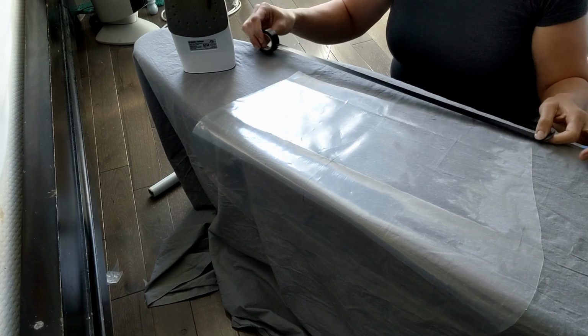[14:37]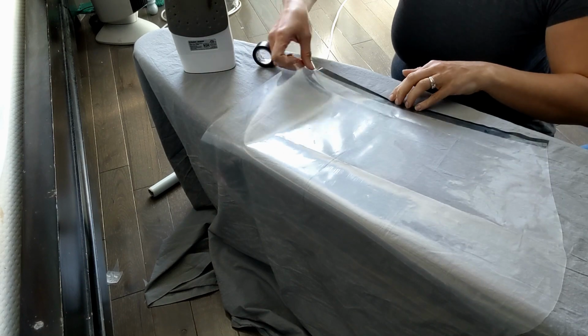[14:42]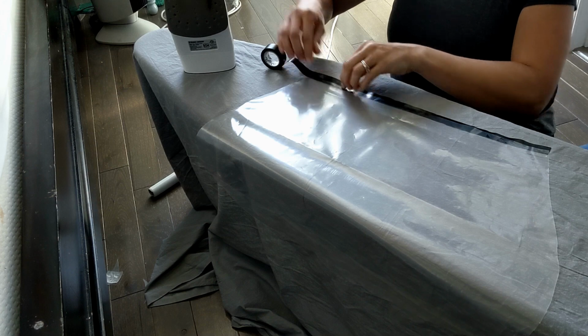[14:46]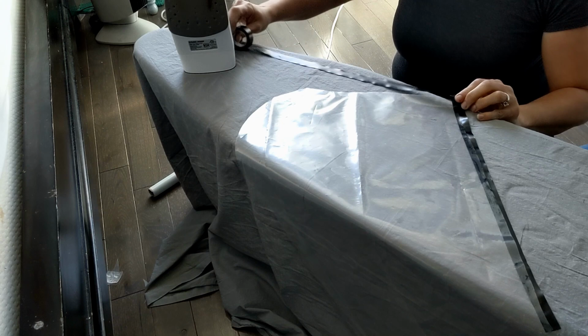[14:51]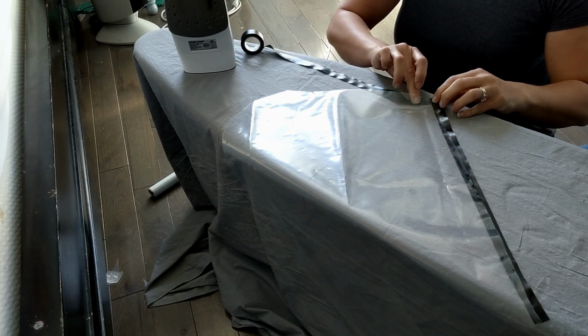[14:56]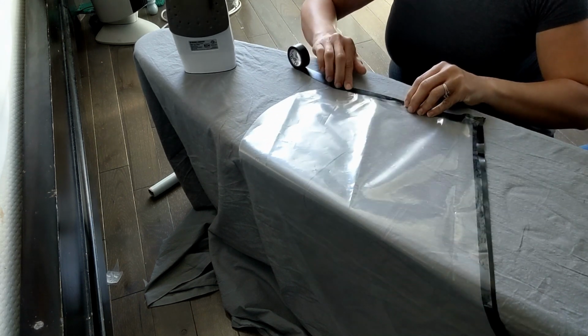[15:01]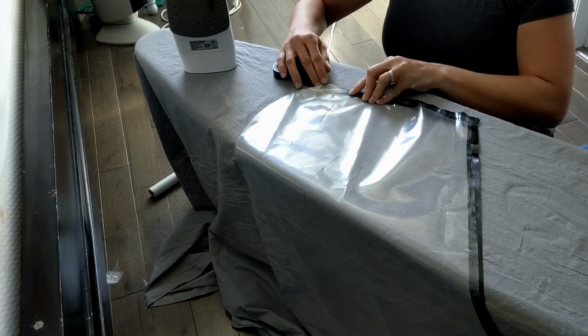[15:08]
So lightly stretch it as you're pulling it out, just so you don't have it rolling back up on you. And then try to put the edge of your vinyl right in the middle. And I found it easier on the edges if I do the turn before I press over. So kind of a little fold right there. I'm just trying to get the edge of my vinyl as close to the middle of the tape as possible because I'm going to fold it over in half.
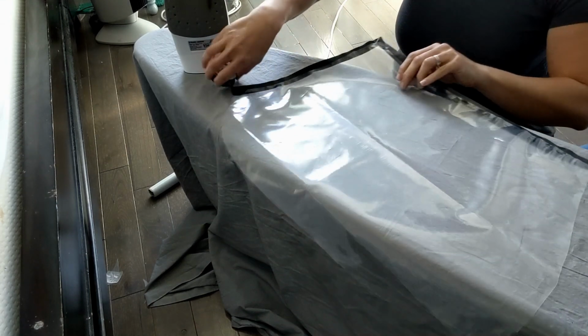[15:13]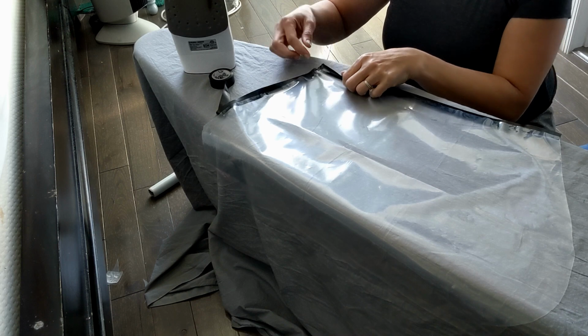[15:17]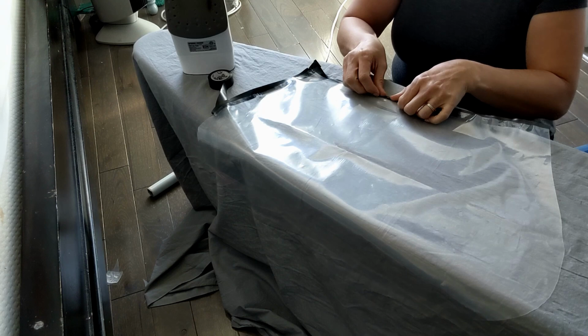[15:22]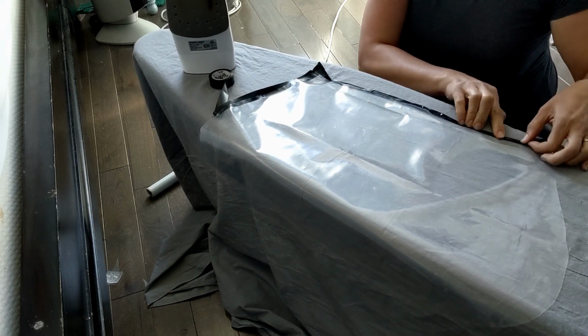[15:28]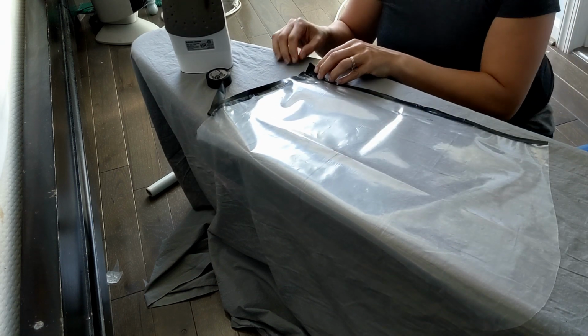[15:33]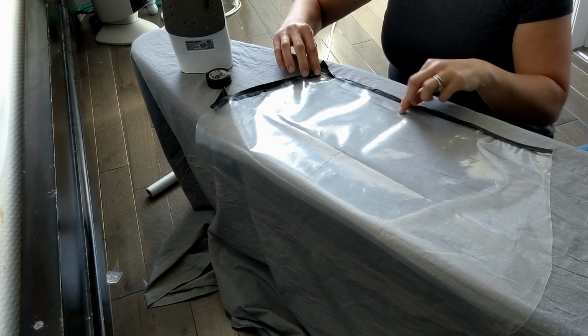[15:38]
Okay, so my iron is heating up. It's about a 1 to a 2, somewhere in there. Every iron's different, so you're going to have to figure out what works best for yours. But what I want to do is melt the edges on because I don't want to rely on the stickiness of the tape. These masks are probably going to have to be reused, and you don't want to have cleaning solutions and stuff like that getting in there and then degrading the quality of your tape and making it lose its stickiness.
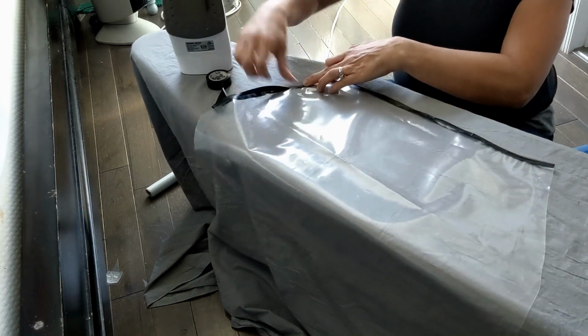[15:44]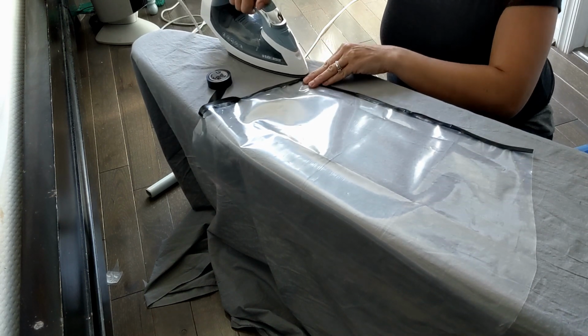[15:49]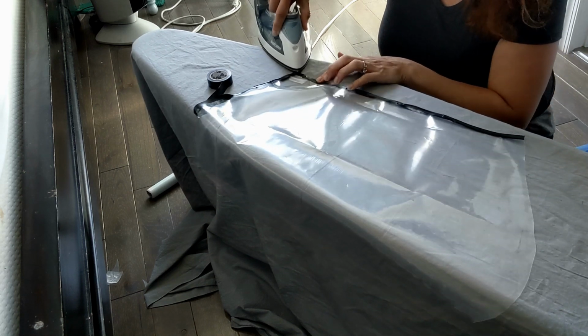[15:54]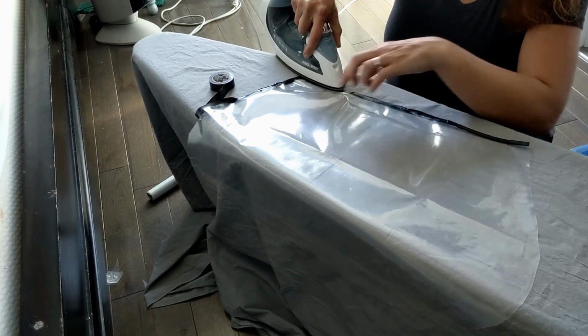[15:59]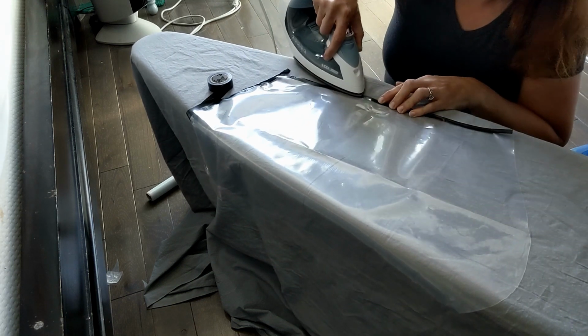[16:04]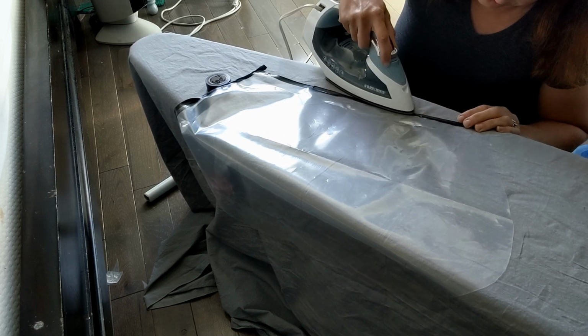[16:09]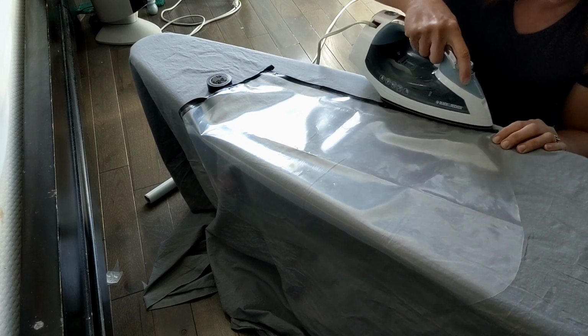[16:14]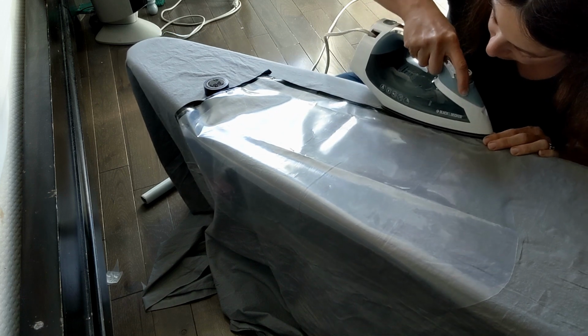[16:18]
So what I'm going to do is take my iron, and I have to make sure I only put the tip of my iron or the side only on the tape. If the iron touches the vinyl, it's going to melt it and it's going to become useless. If you melt your vinyl, it'll make little holes in there, and then our face shield is no longer a barrier. It's more like a screen where viral particles and droplets and all kinds of stuff can come through. So you want to stay only on the black part.
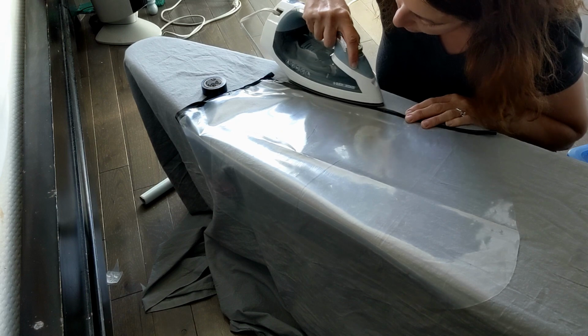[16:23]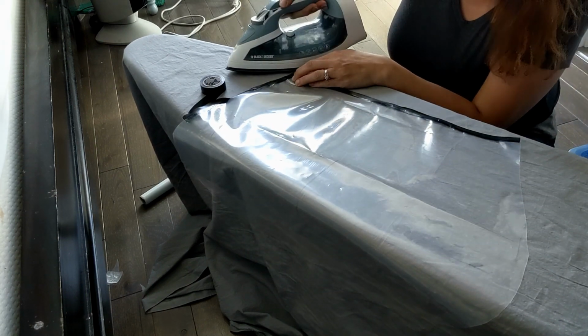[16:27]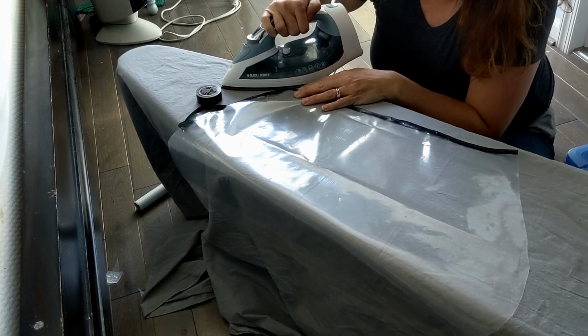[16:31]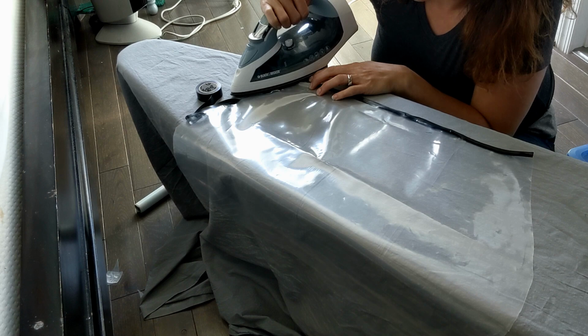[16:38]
You can play around with your heat settings and how long you hold it on there. I think if you get really good, you could go with a slightly higher heat setting and work a little quicker, but you don't want to go too high and melt yourself and then ruin one of your shields.
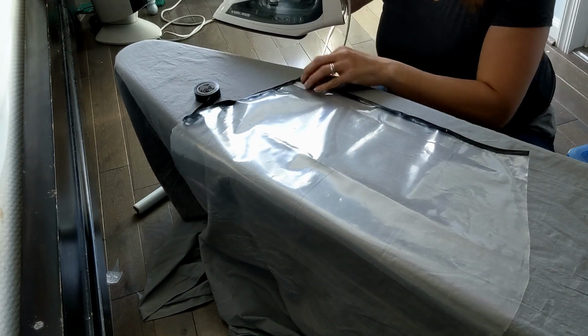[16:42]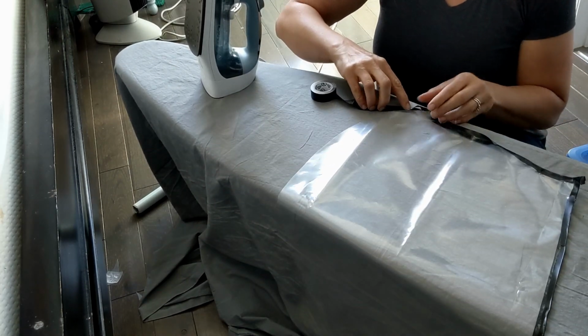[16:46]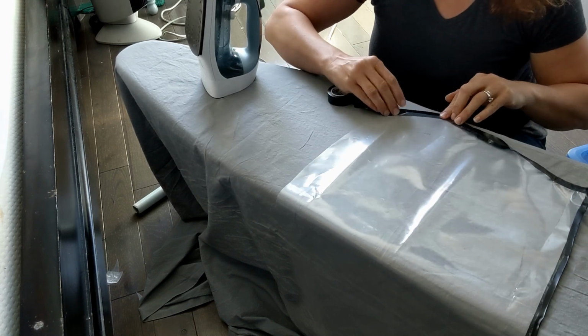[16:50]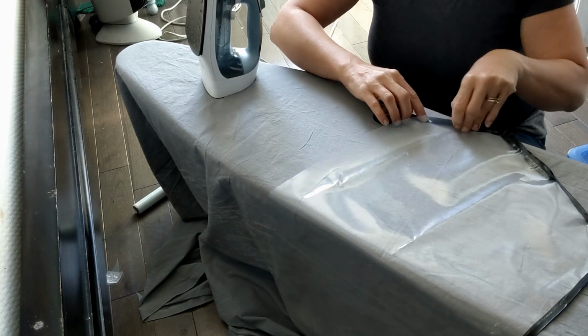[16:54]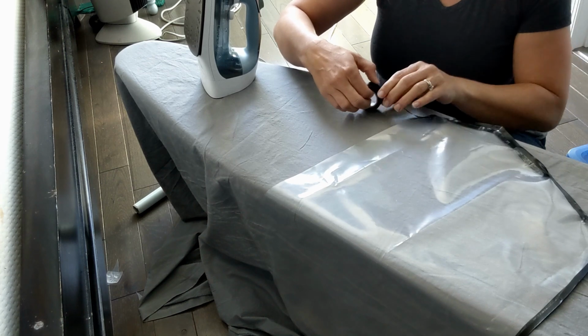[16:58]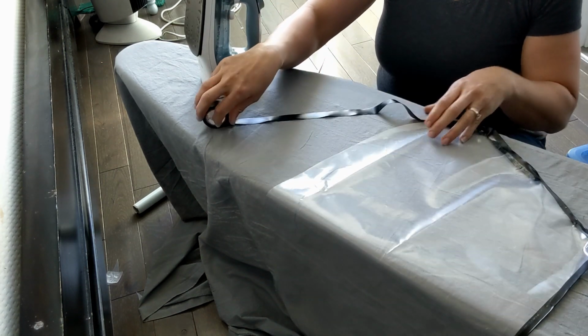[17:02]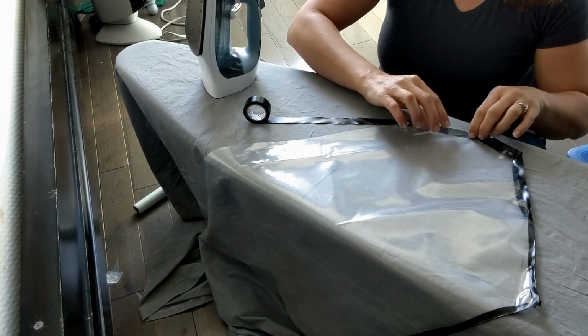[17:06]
On the corners, what I want to do is keep my face shield flat and bend the tape. And the reason for that is that I don't want my shield to wrinkle up. Anytime there's wrinkles in the shield, it affects your visibility and it gets a lot cloudier. There's a lot more glare. So the tape you can bend up as much as you want. The shield you want to try to keep flat and smooth.
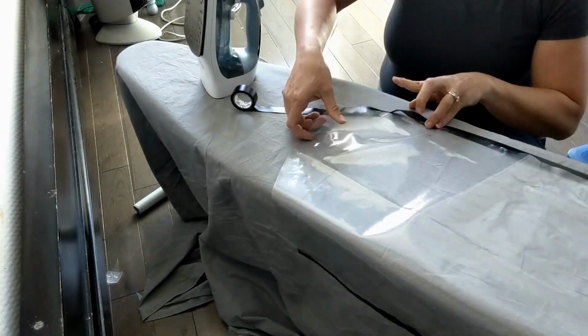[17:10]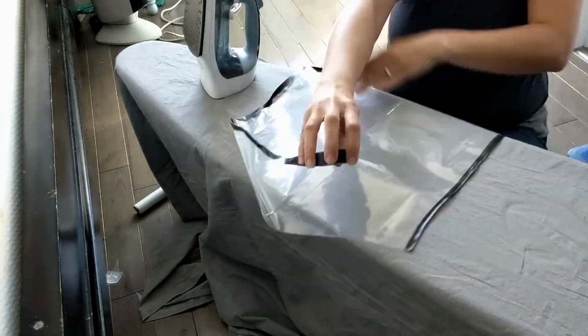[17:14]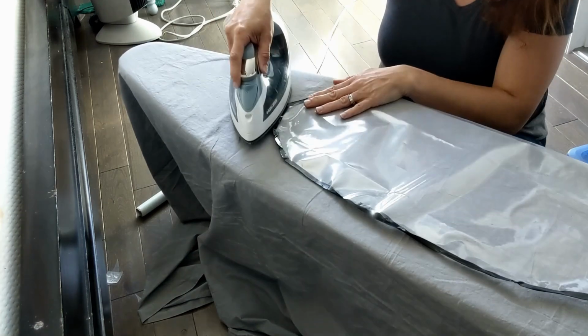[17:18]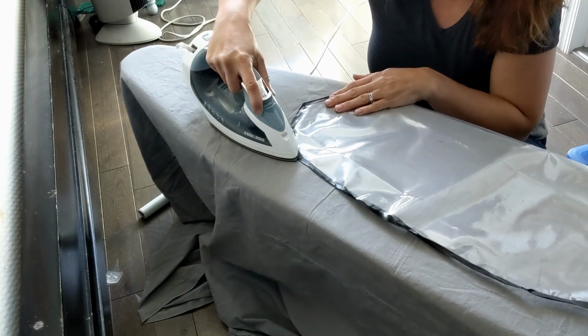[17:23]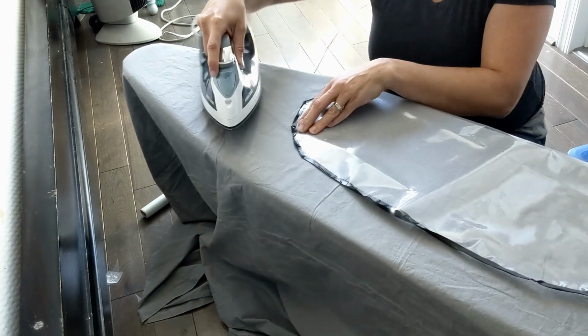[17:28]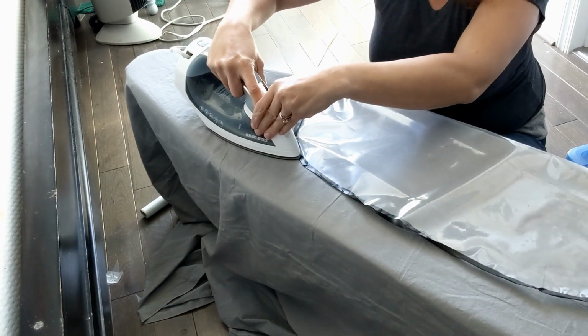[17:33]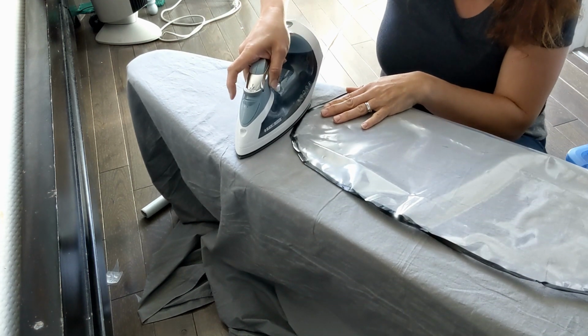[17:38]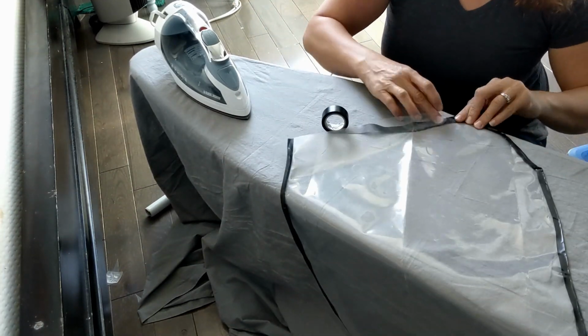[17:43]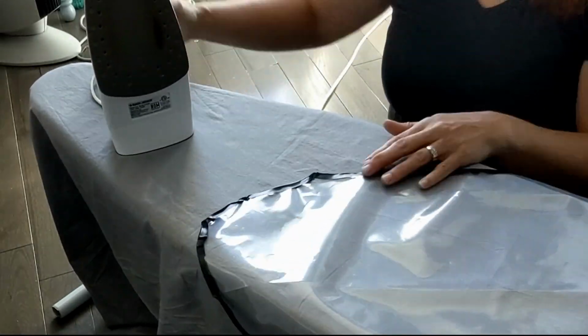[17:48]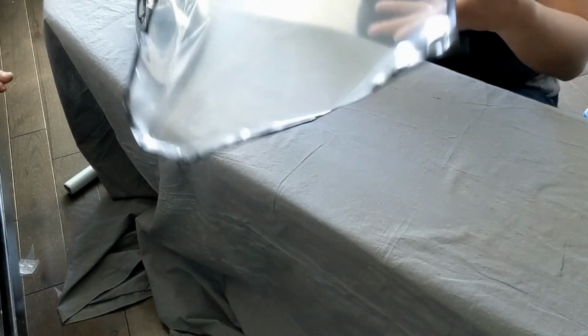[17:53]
And I always try to put a little extra time on the corners, on anywhere where it's not just a straight stick, because anytime you have a little wrinkle in the tape like these, that's going to be a chance where it can start to get unsticky and pull off. So I want to make sure it's really kind of just barely melted on to my vinyl. Now what I'm going to do is turn it over and just iron on the opposite side as well.
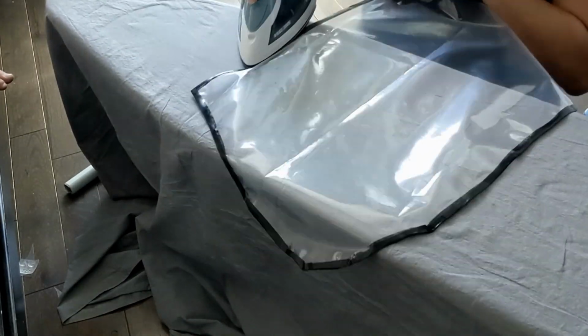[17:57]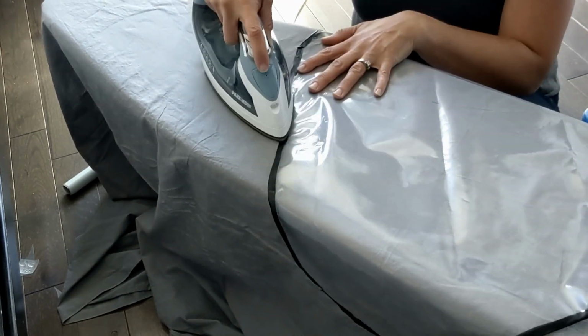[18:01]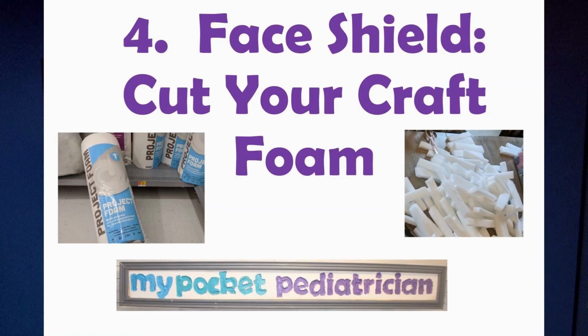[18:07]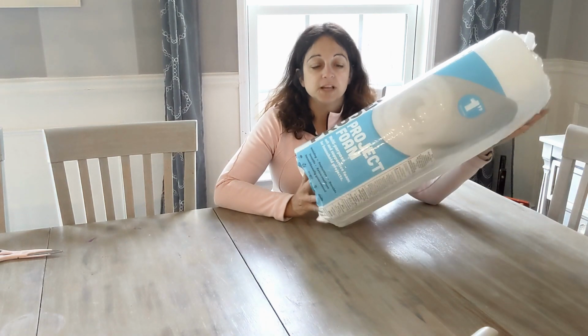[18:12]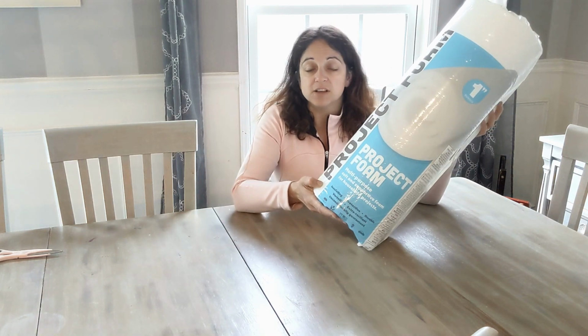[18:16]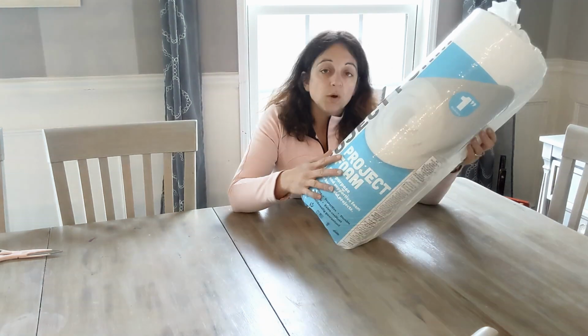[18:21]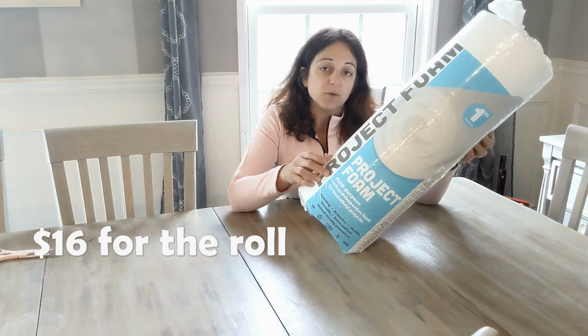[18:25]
Step 4, cut your craft foam. So we're ready for our foam. This is regular project foam. I got it at Walmart. And this piece right here is a nice big long piece. It is 24 inches wide, 72 inches long, and 1 inch thick. I should be able to get about 216 pieces that are 8 by 1 by 1 out of here.
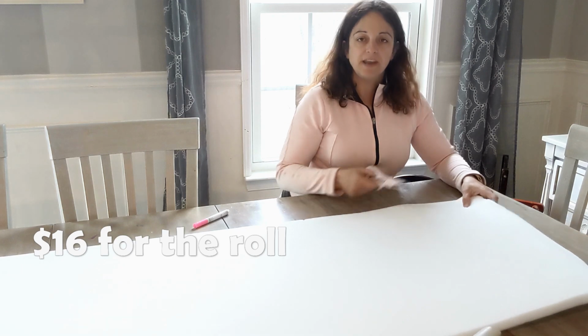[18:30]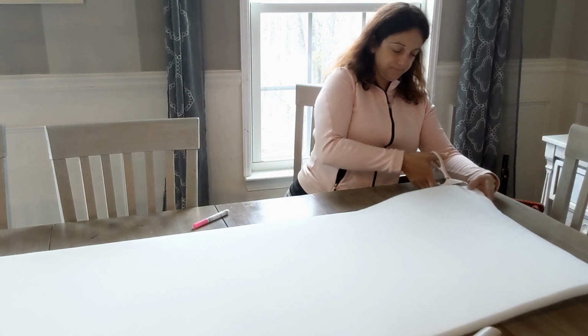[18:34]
So I'm going to go ahead and start cutting it up now. All right, so I have my piece opened up, and I'm just going to start cutting lengthwise strips, and then I'm going to cut those strips into 3 pieces each.
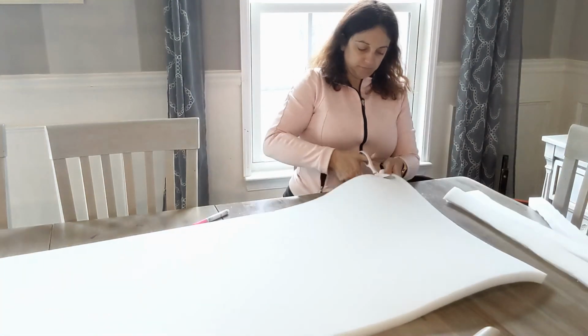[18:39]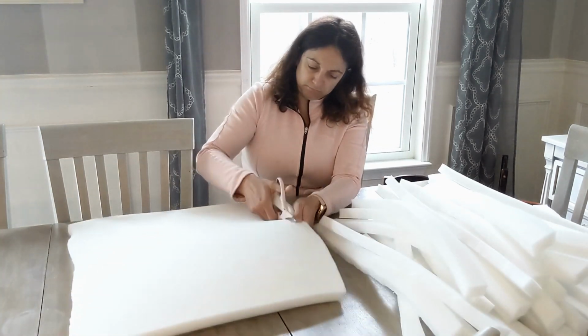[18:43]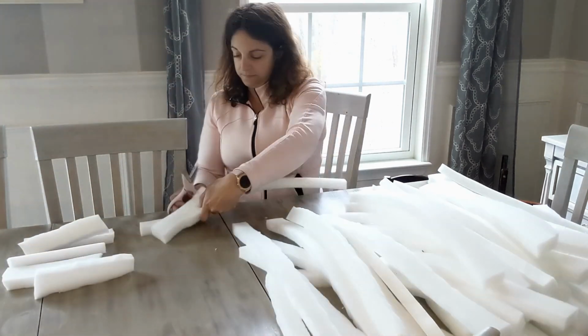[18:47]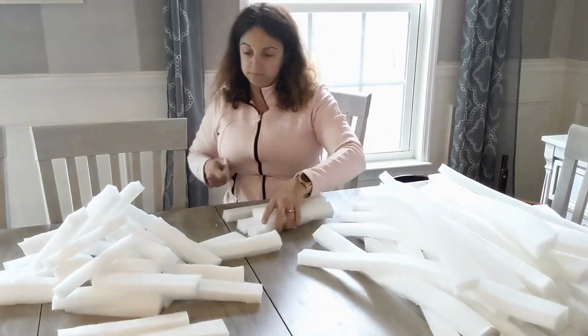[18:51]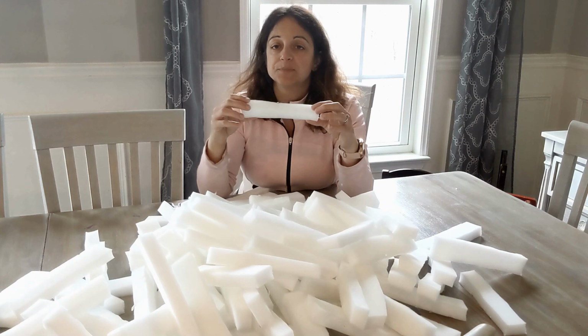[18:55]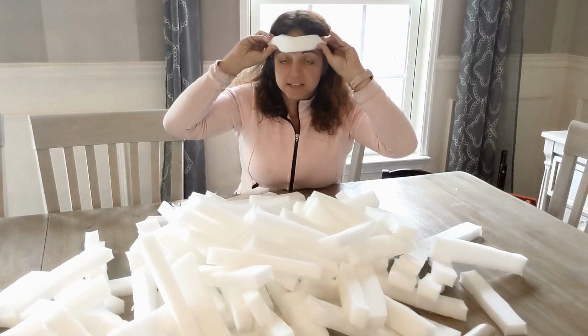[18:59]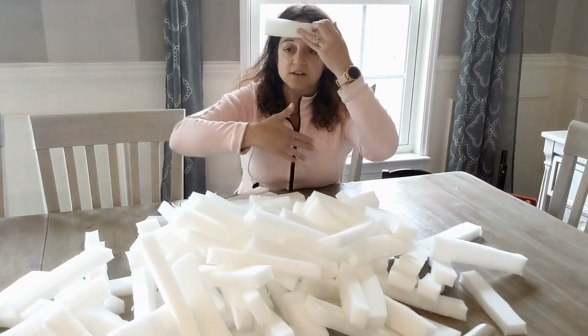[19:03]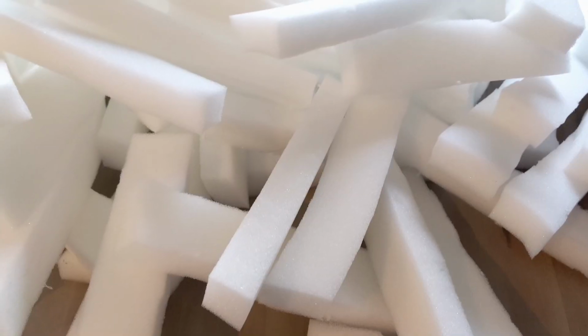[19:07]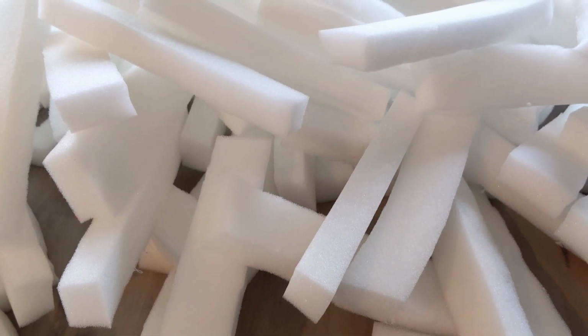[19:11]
What this piece is going to do is go right here on the headband, and it's going to make a little bit of comfort. It's also going to make it stick out a little bit so the shield is not right touching your face, and there's room for eyeglasses or goggles. Okay, so now we have our foam for the headbands ready to go.
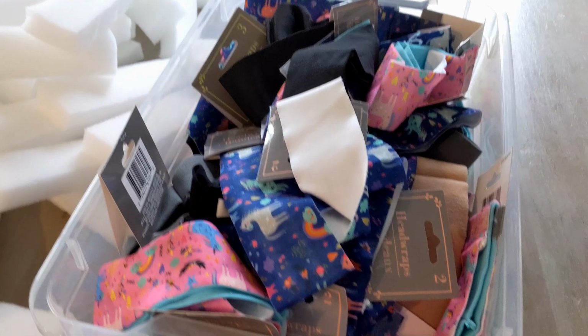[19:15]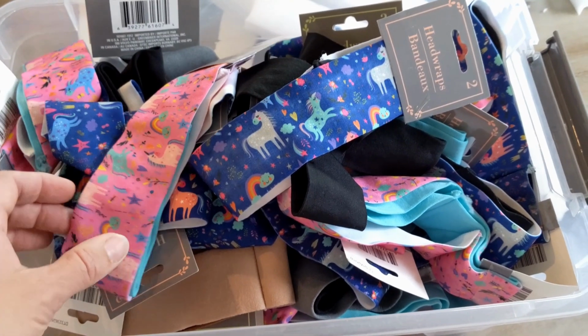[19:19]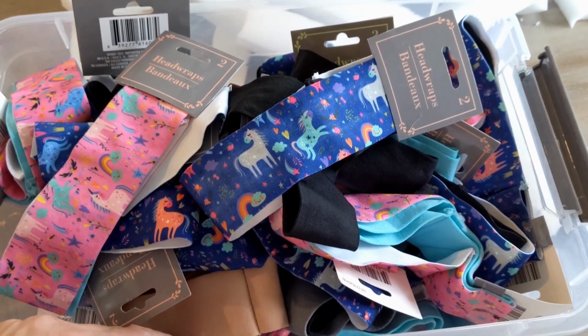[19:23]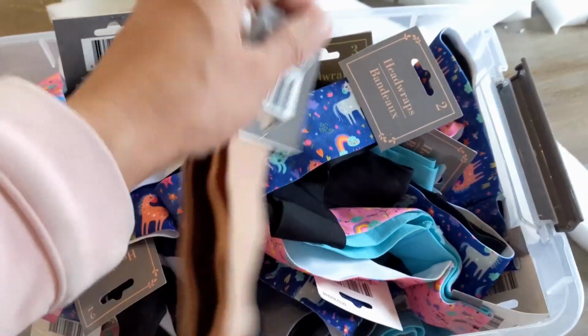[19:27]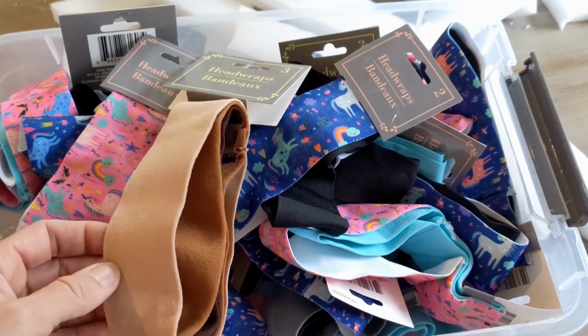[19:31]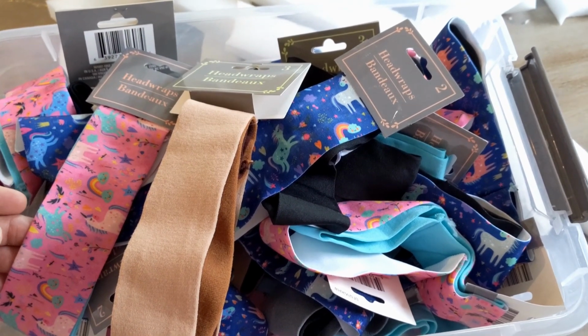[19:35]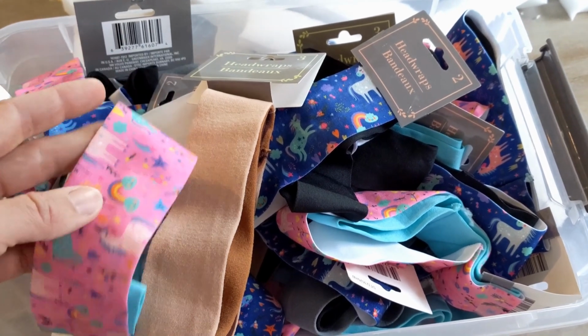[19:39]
Step 5, attach the shield to a headband. And here are the headbands that I purchased. These are the headbands that I chose. I got them at the dollar store. The reason I chose headbands was because there seems to be a shortage of elastic, and I thought these are readily available. They come in packs of 3 and packs of 2 that I was able to find, so it's only 33 cents or 50 cents for the headband, so that keeps our costs down, and they're already made and designed to be nice and stretchy and easy to fit the head.
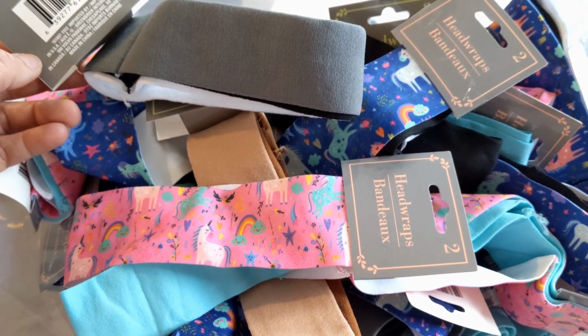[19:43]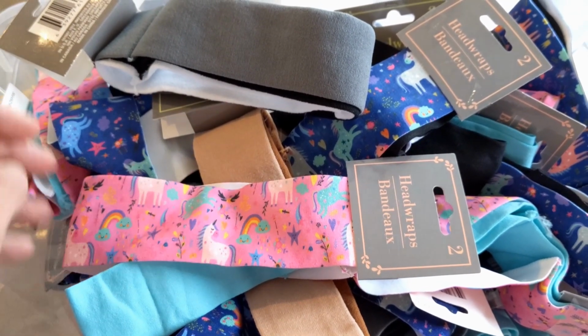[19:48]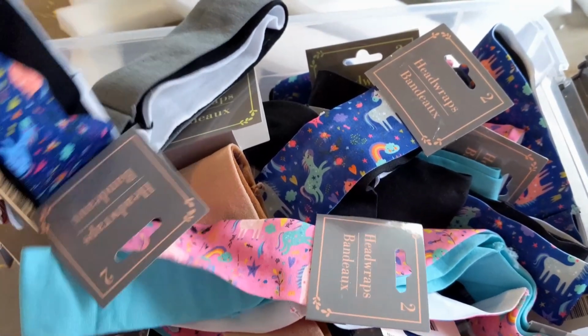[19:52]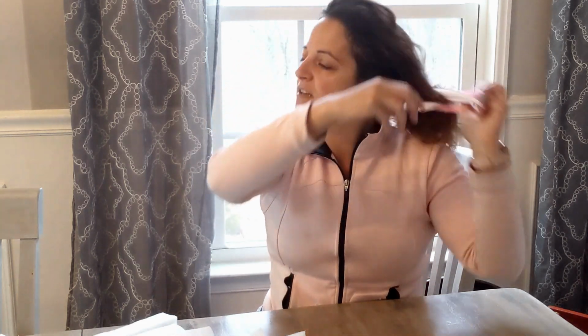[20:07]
Now, I don't know if anybody's going to be excited about this unicorn and rainbow pattern other than maybe some of my pediatric colleagues, but I got as many plain ones as I could, and then when they were out of plain ones, I went for the patterns. So now we're going to start assembling our mask together. Just as an example, this is one of the headbands. It's white on the inside, unicorn on the outside. These headbands were designed to be worn like this, but what I'm going to do is redo it the way a tennis player or a sports person would do as a sweatband. Worn across my head here, it's nice, it's comfortable, it's tight, it's going to keep it to my face.
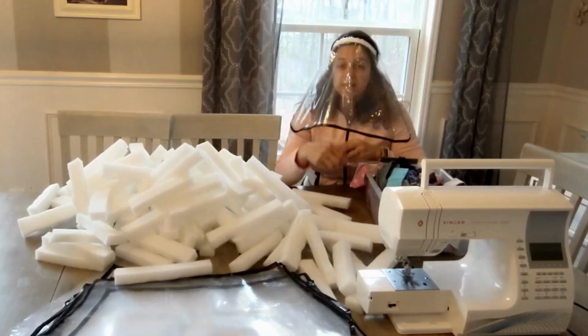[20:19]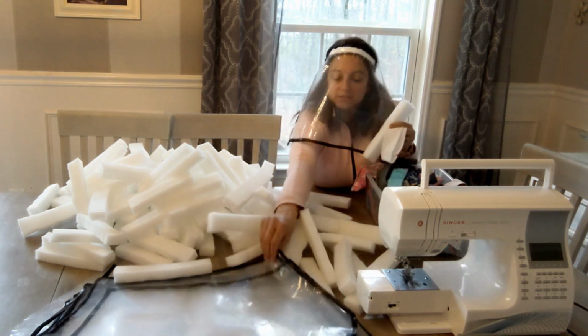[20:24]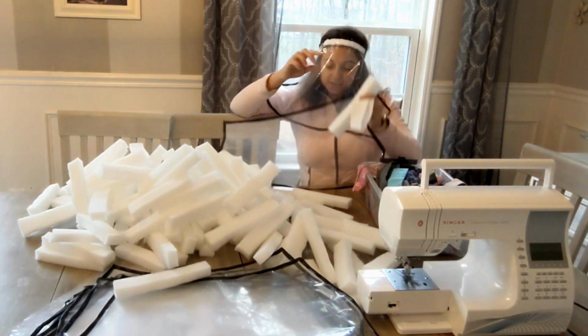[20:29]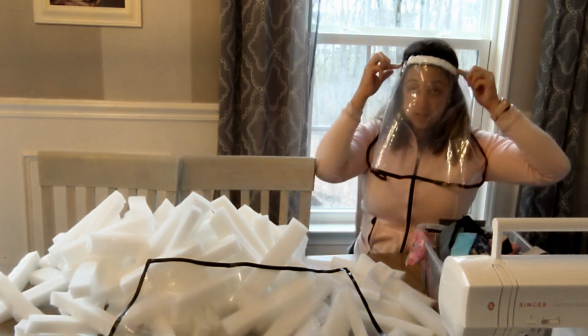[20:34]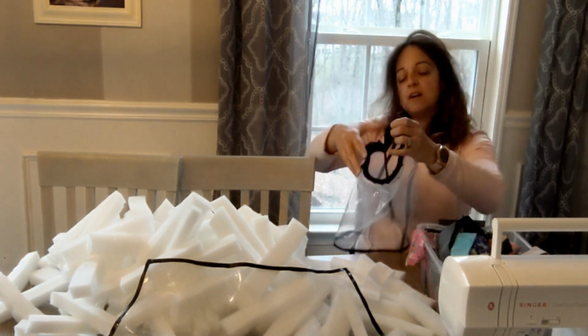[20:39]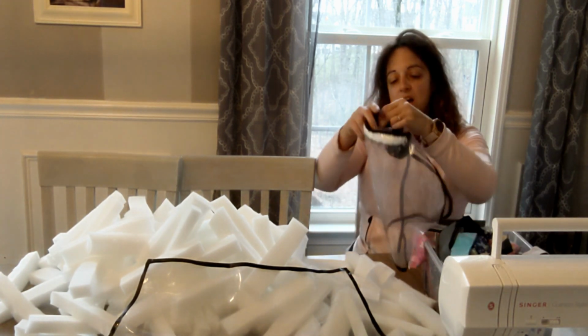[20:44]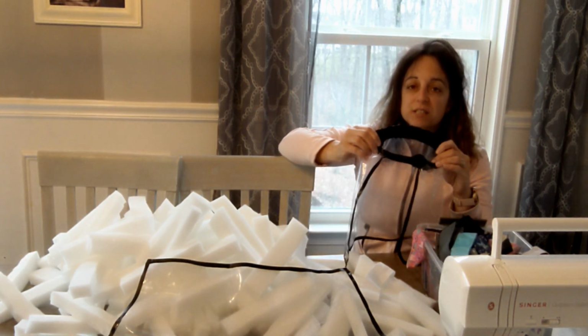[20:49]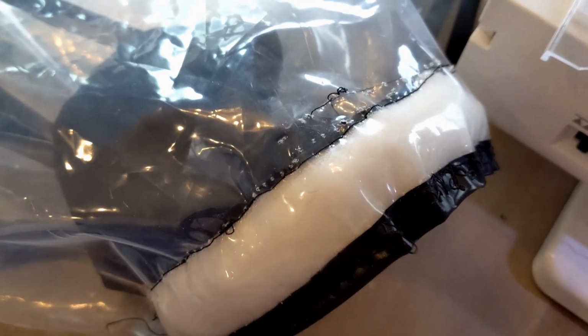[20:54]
So now we're going to start our assembly. Now it's time to take these three elements, our foam, a headband, and one of our vinyl sheets, and we're going to put them together to make this. You can see here on the inside I have the foam stitched into the headband. The headband goes comfortably around my head. I've got the soft side of the headband towards my face, and the outside is plastic. And I've left about this much room here where there's no shield attached to the headband. That gives a little bit of stretchiness and comfortability to the shield.
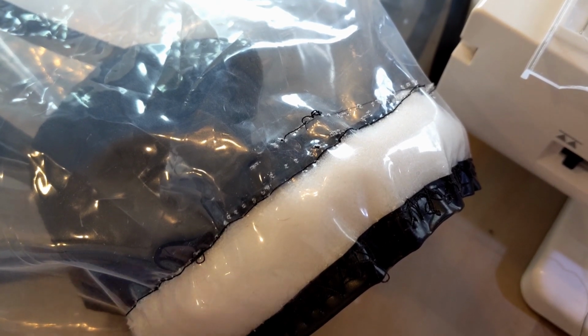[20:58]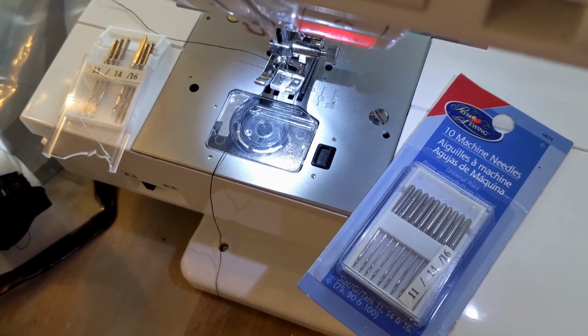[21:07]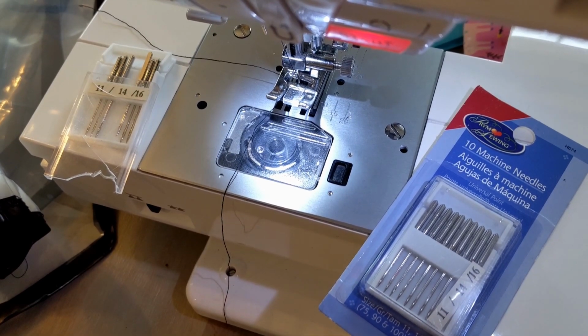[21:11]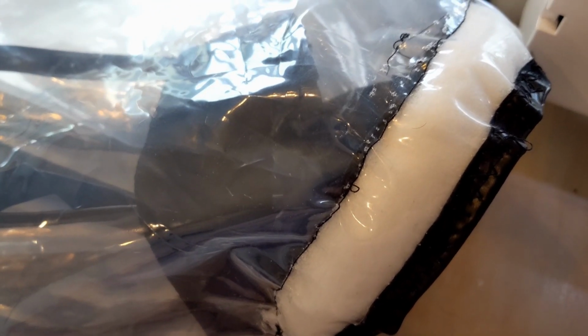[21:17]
Now, one of the issues that I had when I was making my samples, and you can see here these tiny little dots, is that the thread wasn't catching from the top thread to the bottom thread. And I think that's because my needle was too big. Sewing machine needles come in different shapes and sizes. So I went ahead and traded out my sewing machine needles for 11s. I just put an 11 in there, and we'll see if that gets me a smoother stitch. Because anytime you have a hole anywhere in your product, that's a place where a droplet or particle could get through, and that's the opposite of what we want.
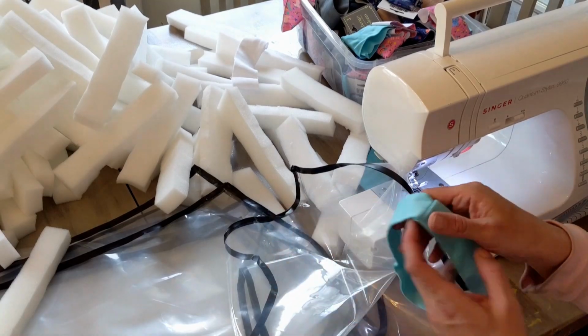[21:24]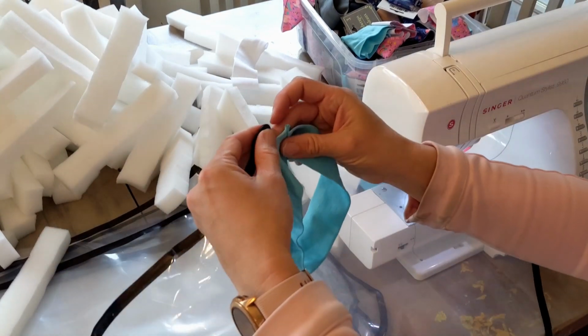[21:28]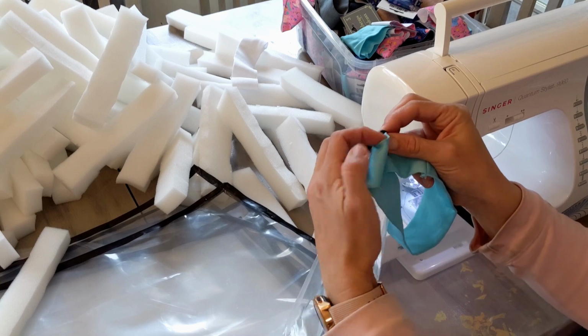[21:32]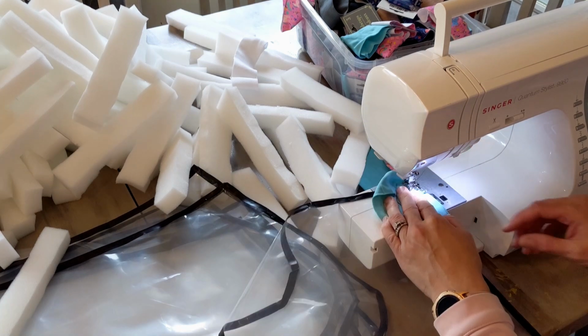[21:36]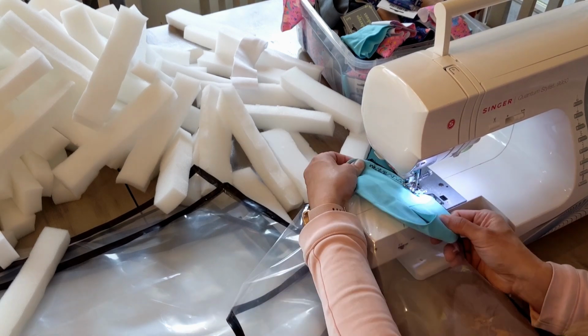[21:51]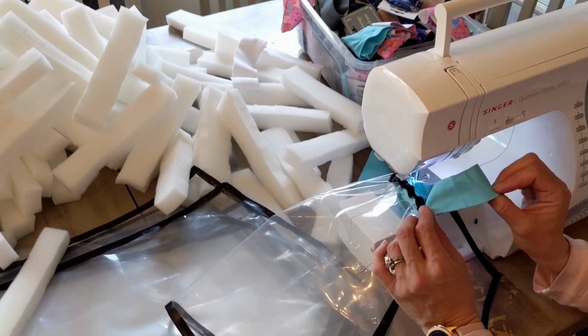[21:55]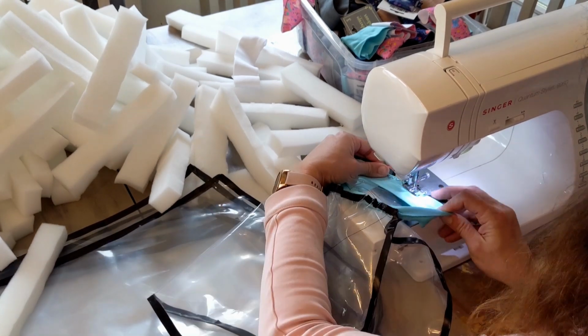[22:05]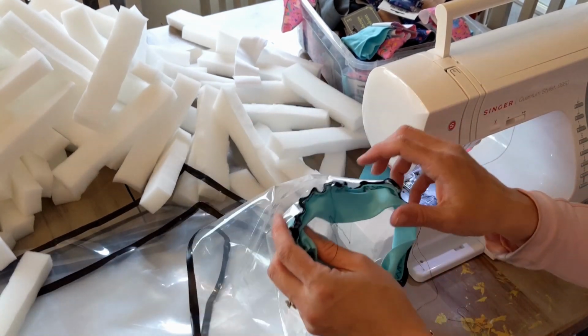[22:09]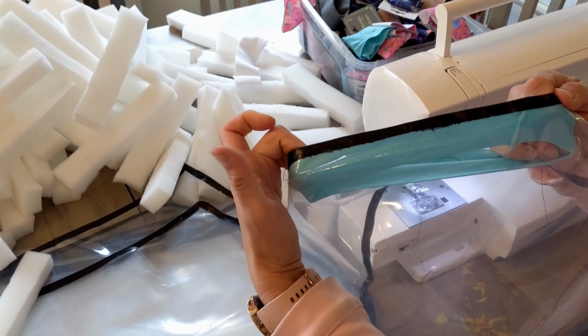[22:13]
So the first step we're going to do here is take our shield, and we're going to sew the headband to the top side of the shield. I'm going to start very much in this corner. It doesn't exactly matter where you start on the headband because it's a loop. And I'm going to do a zigzag stitch because there is some stretch in this fabric. As I'm sewing, I'm stretching the band as I go. As I'm stretching, I want to leave about 4 inches here that's not going to be sewn to the headband. So now I have the top side of my headband stitched straight through the electrical tape over the top.
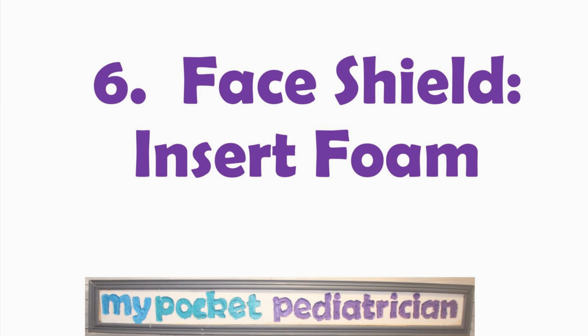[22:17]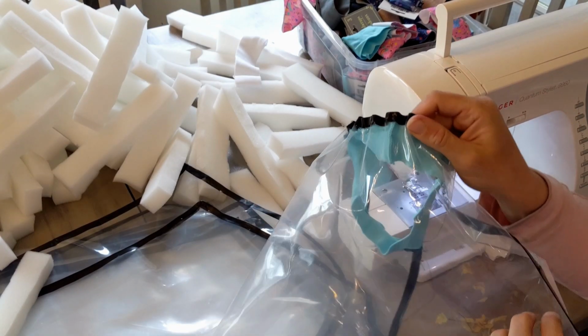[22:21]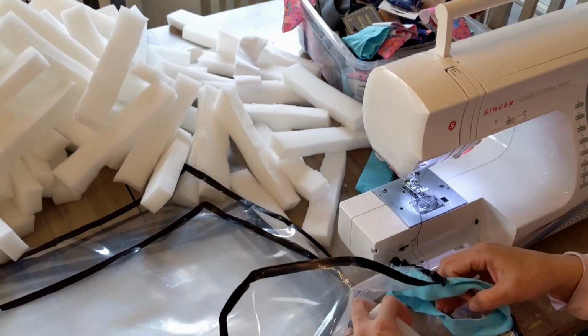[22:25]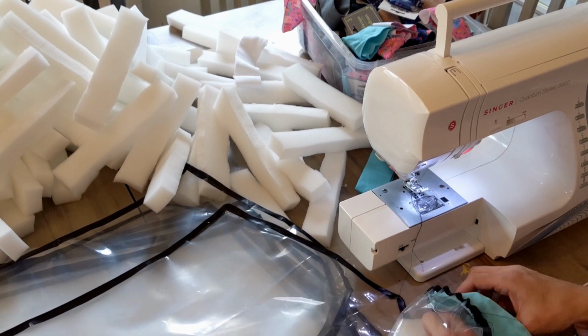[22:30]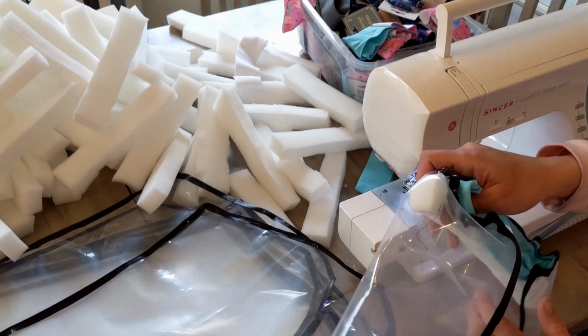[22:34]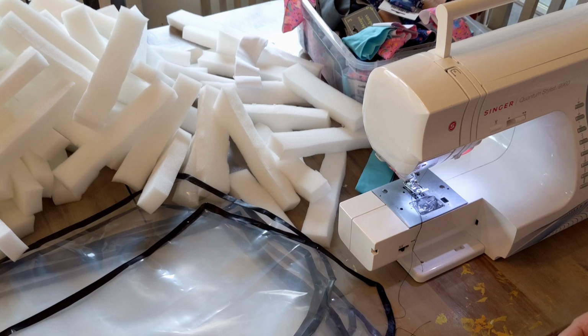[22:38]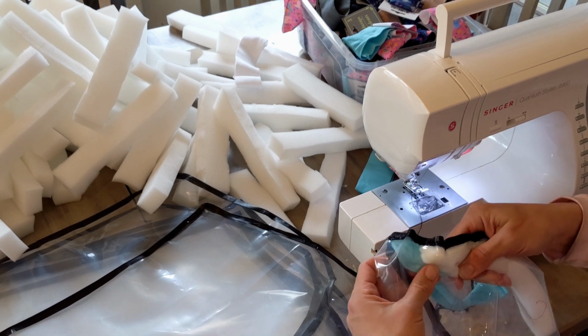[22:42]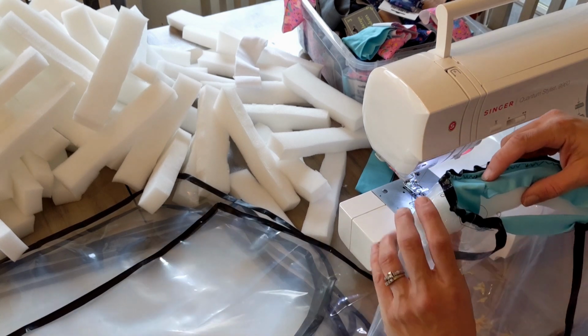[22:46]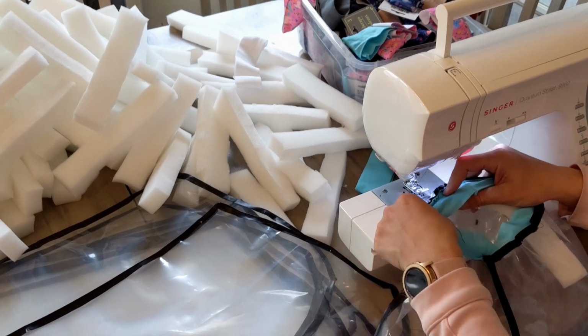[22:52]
Step 6. Insert your craft foam into the headband. Next, what I'm going to do is put my foam piece in the middle, in between the headband and the vinyl. Like I said, we can have slightly different widths of the foam, but what I want to do is encompass this foam inside the headband here. So I'm going to stitch along both sides here, and I believe it's actually better when I've tried it both ways. I've had a little better luck doing a straight stitch along this. I don't know how you're going to do, but I'm going to start on one side. I just want to make sure it's centered. So I have it going about right here, yep. And I'm going to start by sewing my down stitch here with a straight stitch.
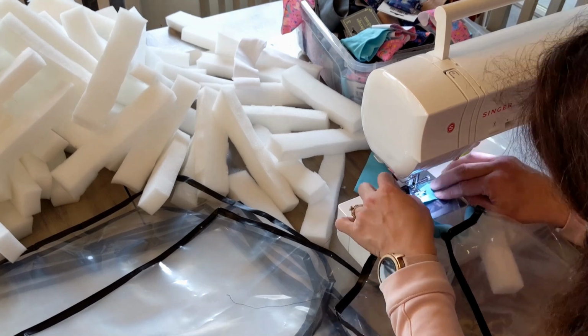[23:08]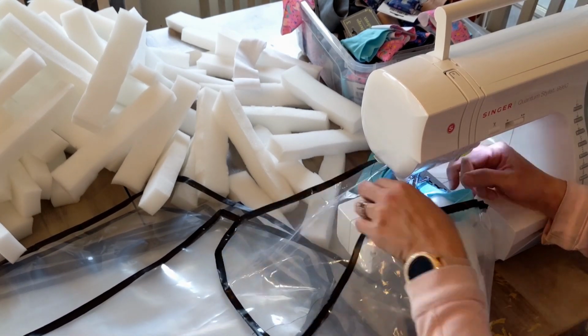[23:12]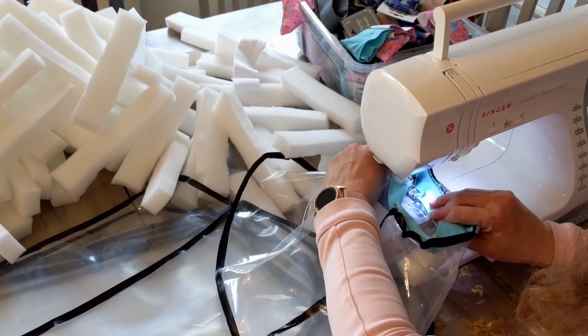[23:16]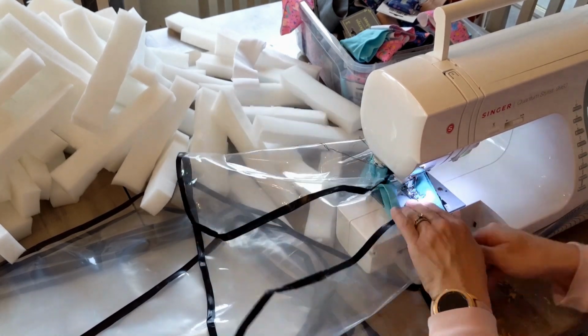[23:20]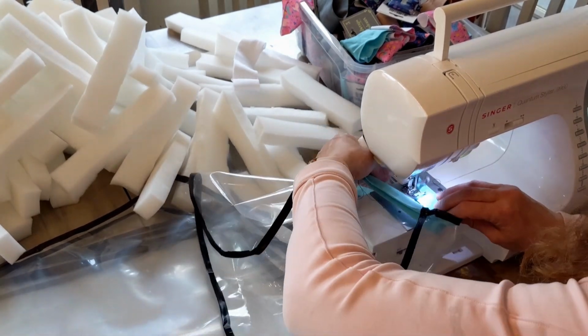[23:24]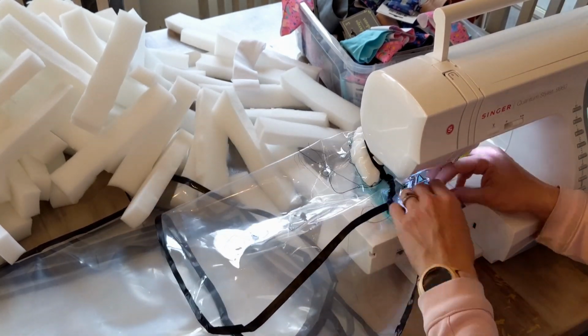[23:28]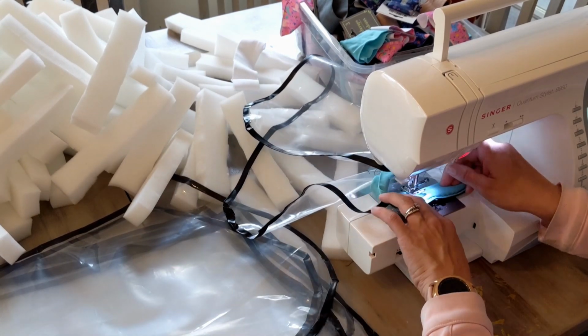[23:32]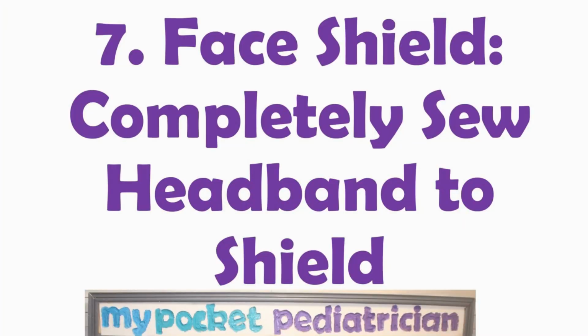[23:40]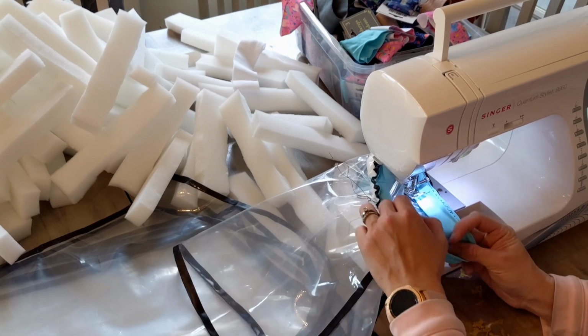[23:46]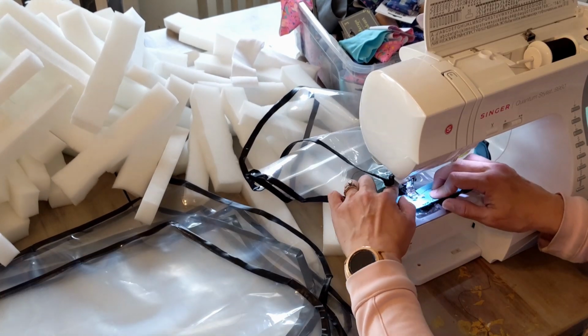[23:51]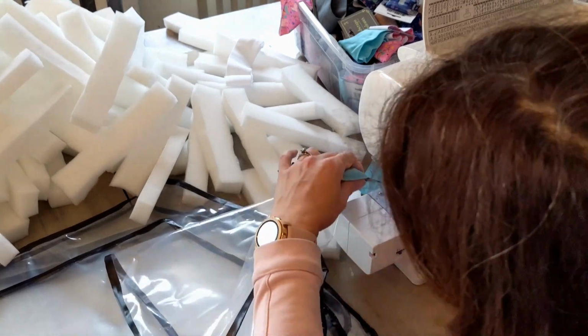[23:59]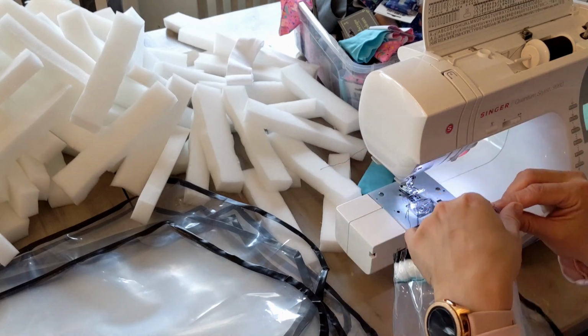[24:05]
So I'm at the end of my foam, just going to seal that in there. Step 7. Completely sew the headband to the shield. I'm just going to finish the rest of the length of my headband to the shield. And we're just going to finish off the edge going through the electrical tape portion as well. So we got that side, so we just need to finish off this side.
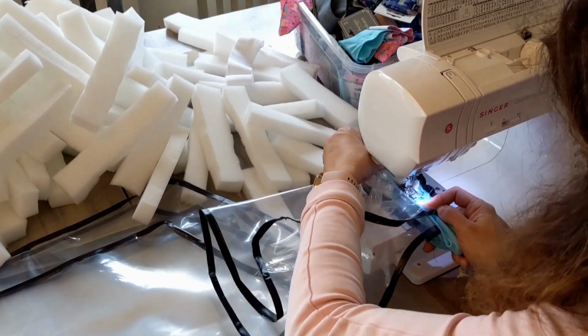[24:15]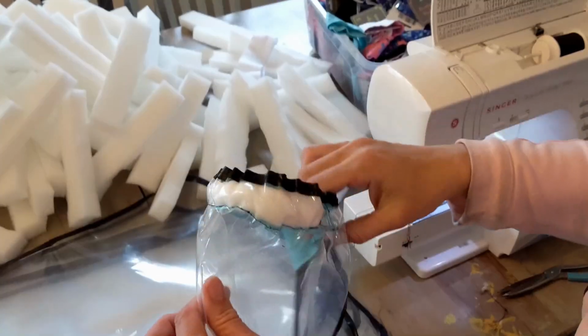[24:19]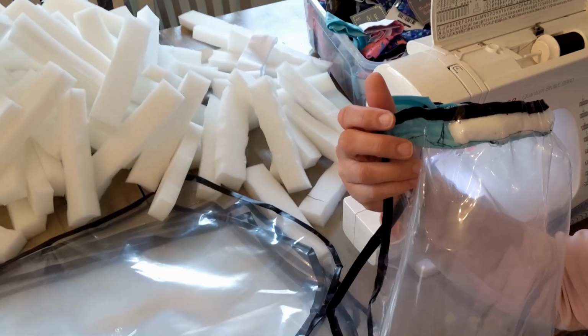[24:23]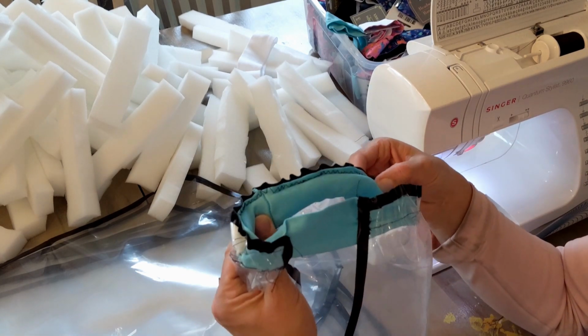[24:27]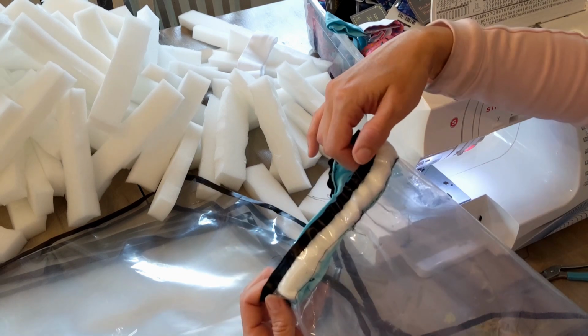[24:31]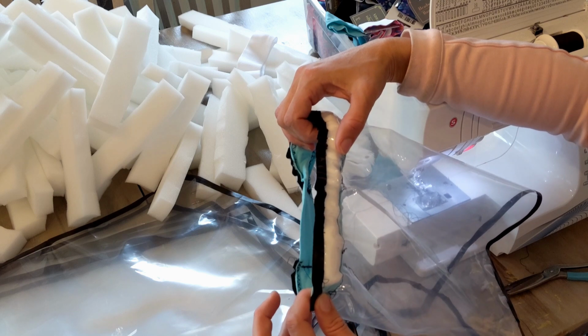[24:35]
Okay, so now we have a mask. I've debated with myself about the zigzag stitch versus the straight stitch. I know the bottom, you definitely need a straight stitch. For the top, some of the ones I've done, the zigzag works better. Some of them it seems like the straight stitch works better.
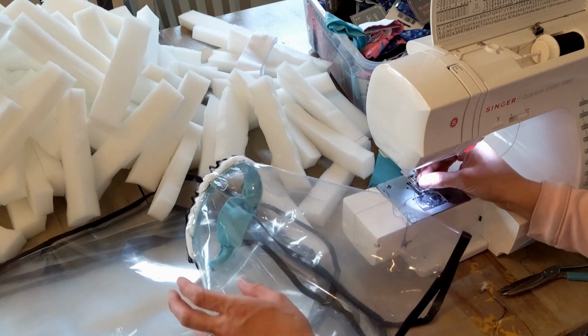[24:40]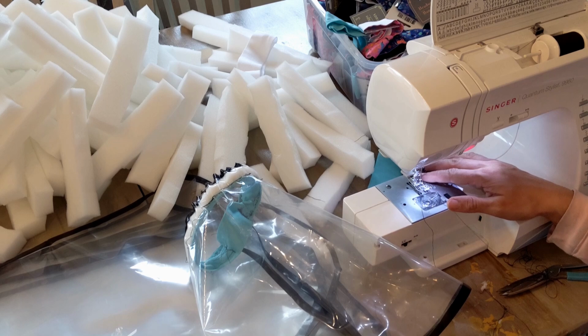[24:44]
Again, we're sewing through electric tape, which has a little bit of gummy stuff, which can get on your needle and cause your thread to bunch up and stuff like that. So it's hard to know what's the right answer. I'd love more people to work on this and let me know what you think.
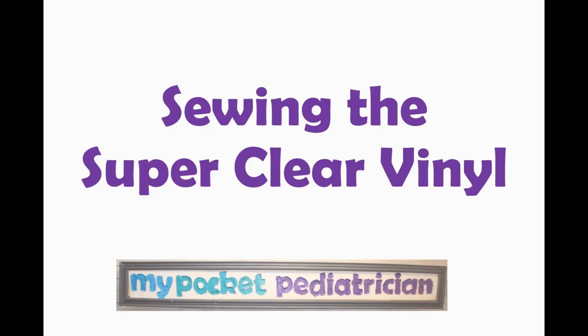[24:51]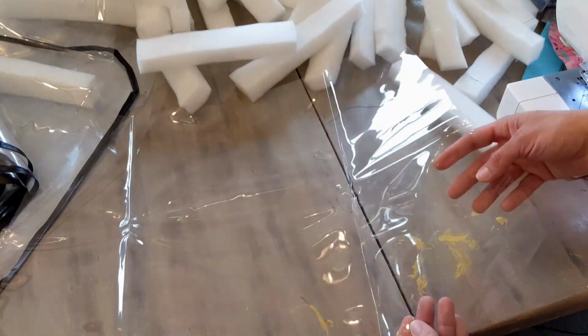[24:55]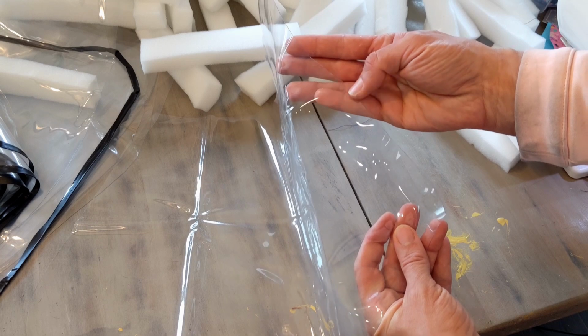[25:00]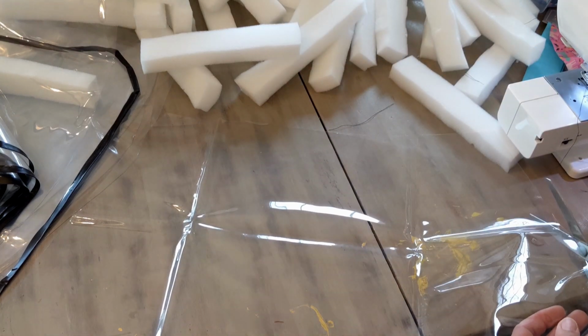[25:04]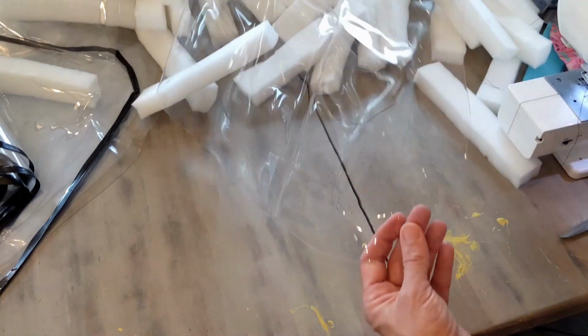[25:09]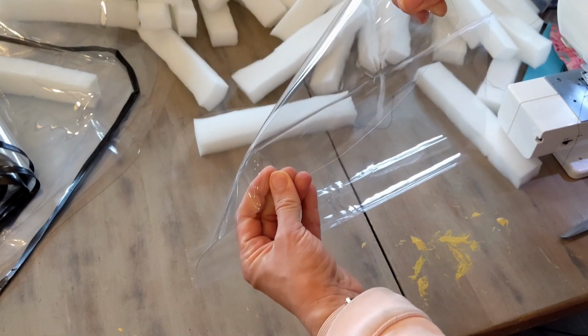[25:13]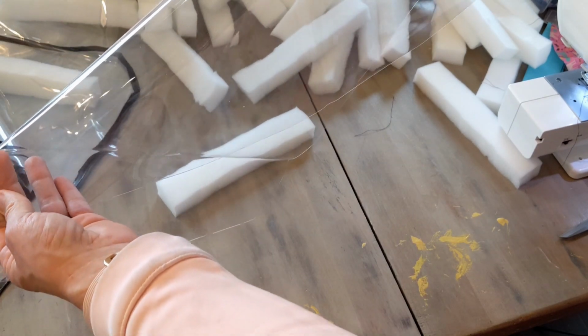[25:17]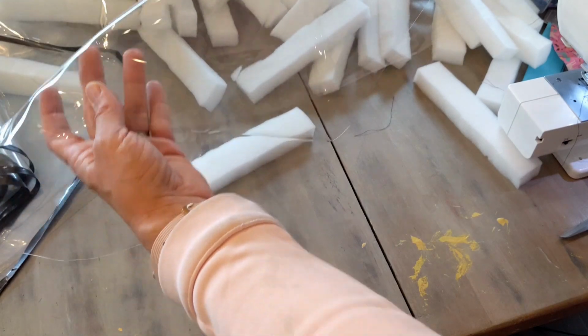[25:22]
Now this is an example of the heavy duty super clear material that I used. There's a very slight break in the edge. You definitely want to make sure every little bit is as smooth as can possibly be. If you have really smooth edges, I've been trying with a sample piece and there's no way to tear it. I've been pulling it as hard as I can and it just doesn't tear. So I don't think I need to finish the edges on this, and I just want to check this and see how well it sews.
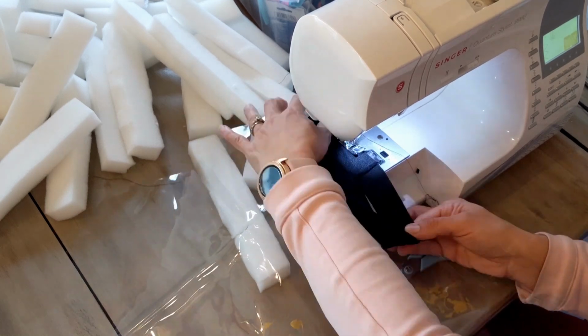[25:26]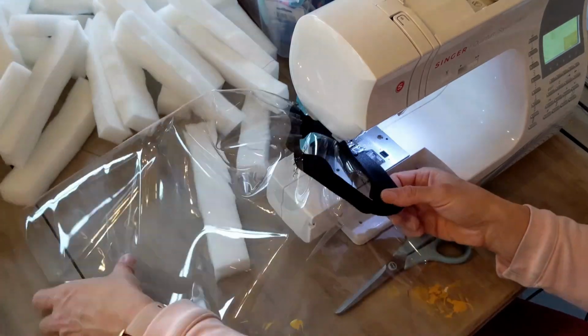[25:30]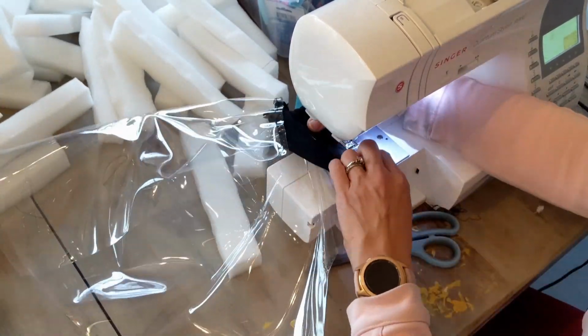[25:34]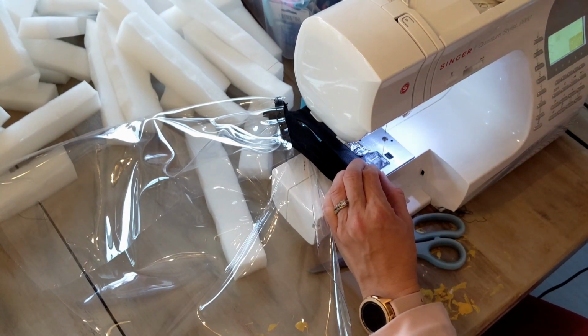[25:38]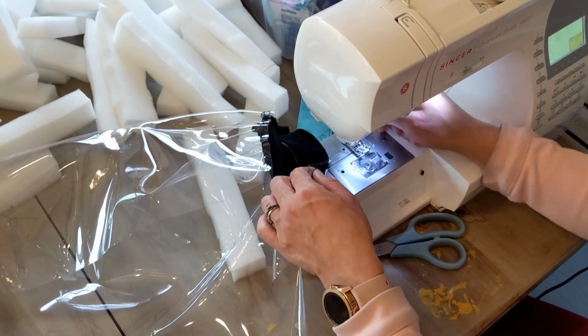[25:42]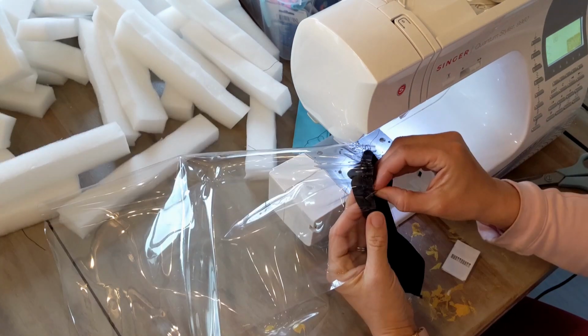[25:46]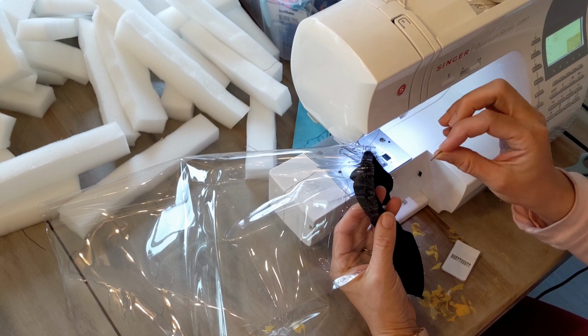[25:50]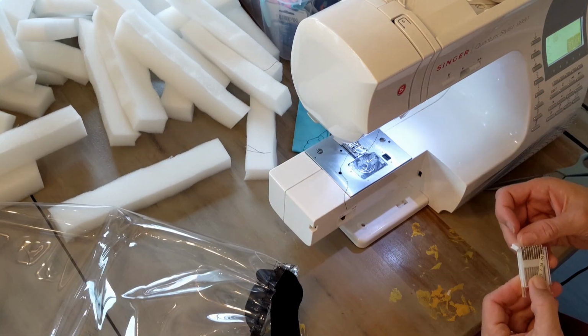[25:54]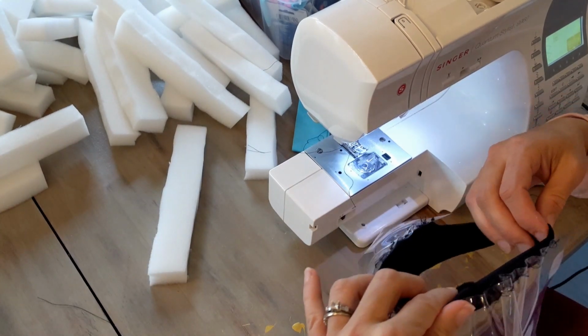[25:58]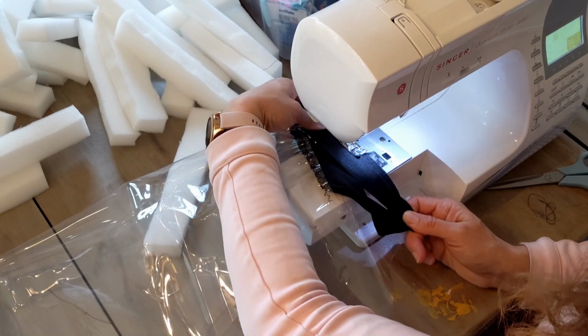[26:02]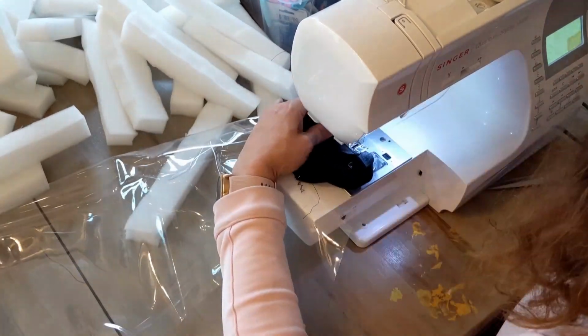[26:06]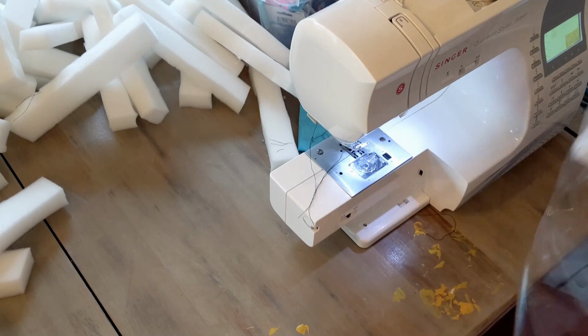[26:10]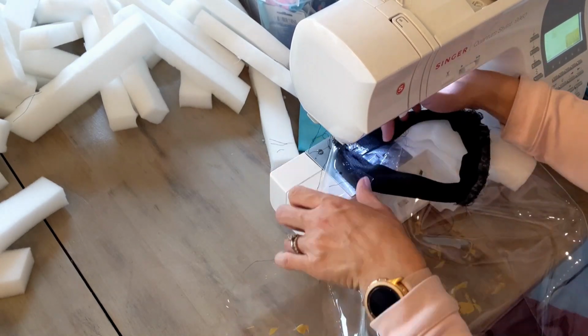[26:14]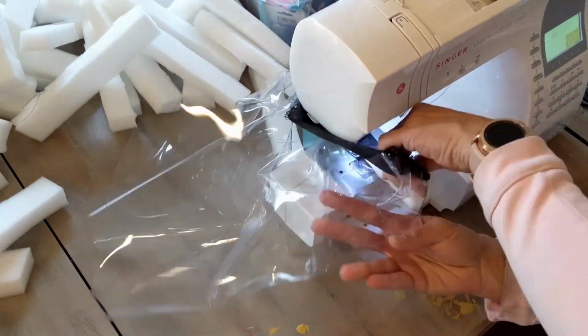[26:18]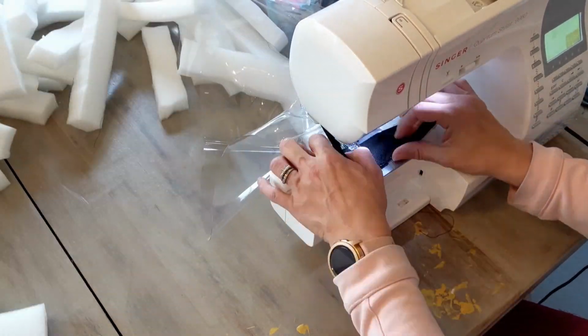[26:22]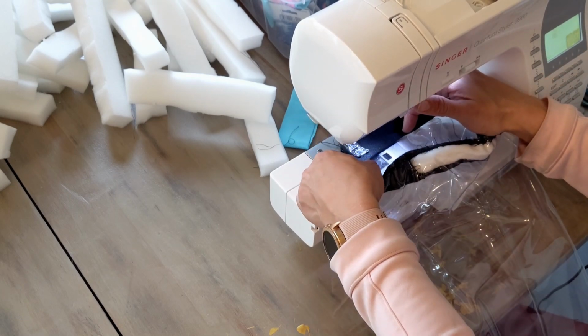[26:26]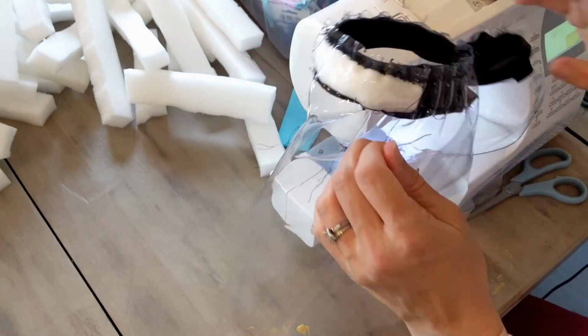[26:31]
Oh, that just broke my needle. So I guess maybe going for the skinniest needle wasn't the best idea with this one. That was using an 11 needle and it just snapped the bottom of my 11 needle right off. So I guess I need to have a stronger needle for this heavy duty vinyl. There we go. Here's our mask.
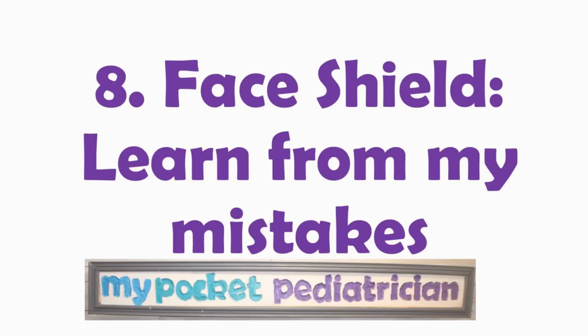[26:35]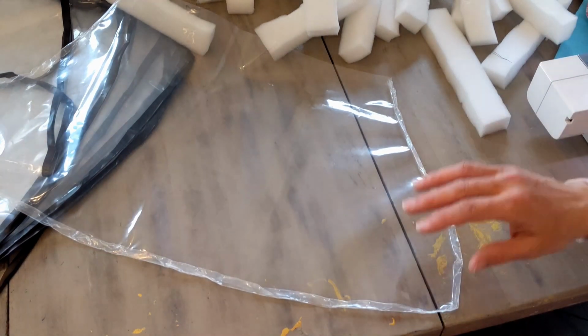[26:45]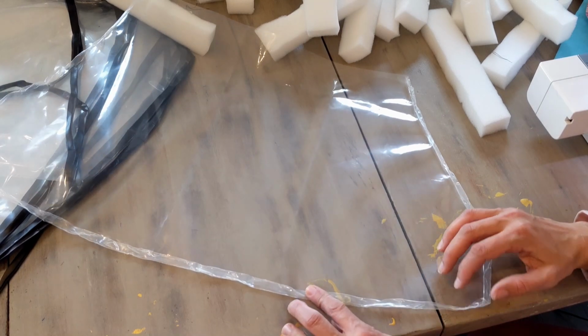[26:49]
Step 8, learn from my mistakes. These are all the things that I tried that really didn't work, and I don't want you to go down the same wrong path that I did. I'd also like to just take a minute and talk about some ideas that I had that maybe went wrong or weren't that easy. So one idea, instead of doing the electrical tape, I decided to do a double rolled
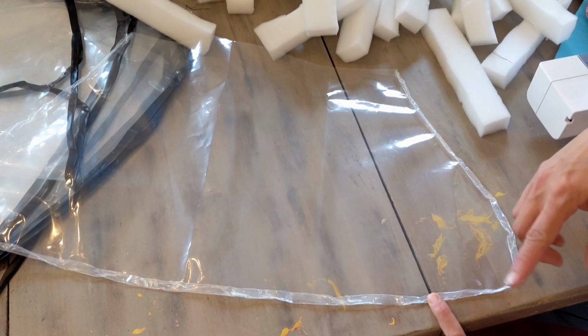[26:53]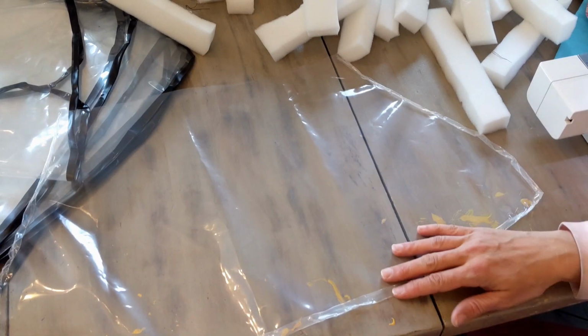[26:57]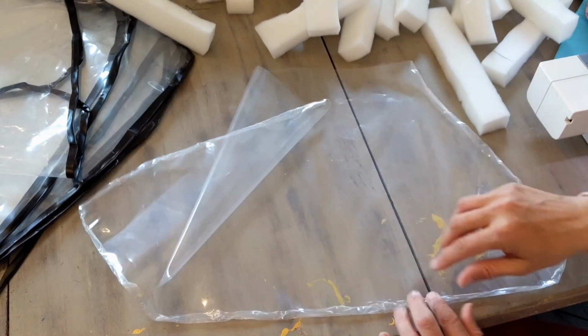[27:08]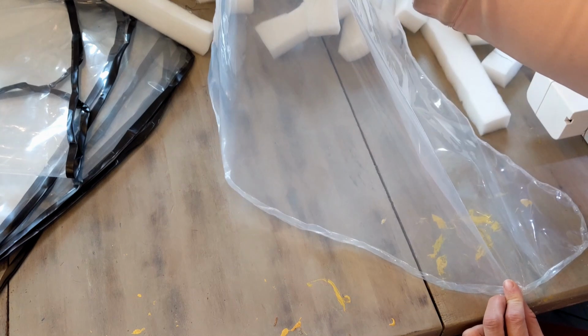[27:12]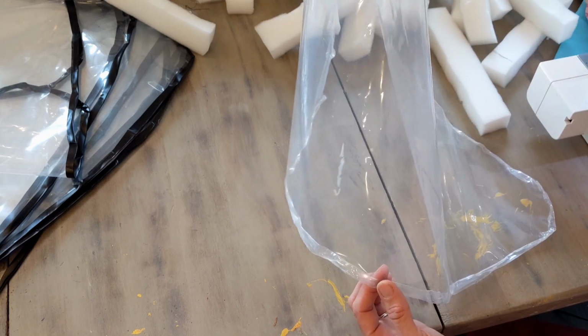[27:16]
hem and then iron all the way around it. It works. It's very time consuming. It took me about 3 times as long to fold it and iron it because it kept trying to unfold. So it's something you could do if you don't have electric tape and you have a little more time on your hands. You'd put the rolled edge towards the mask wearer or the shield wearer, and then you would have a smooth edge on the outside, which is kind of nice. But that's one other option there.
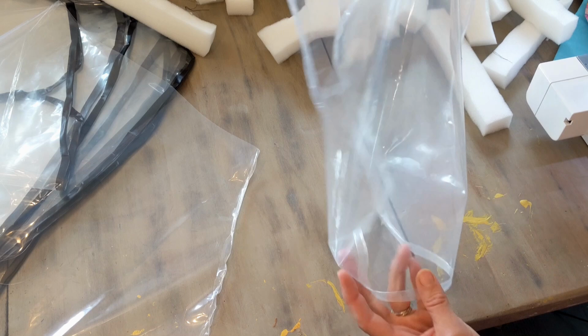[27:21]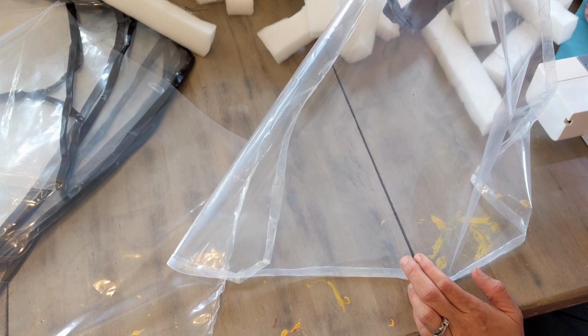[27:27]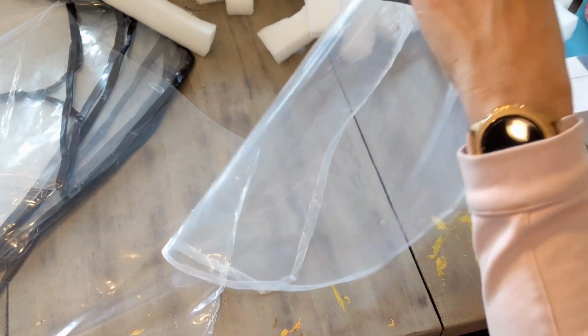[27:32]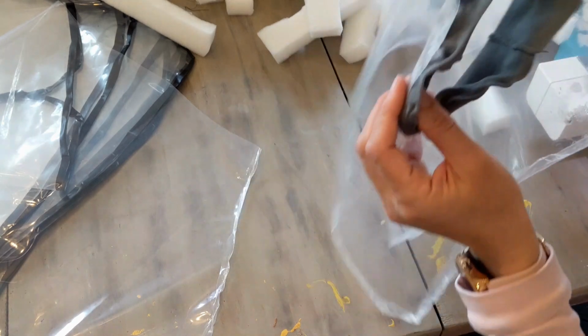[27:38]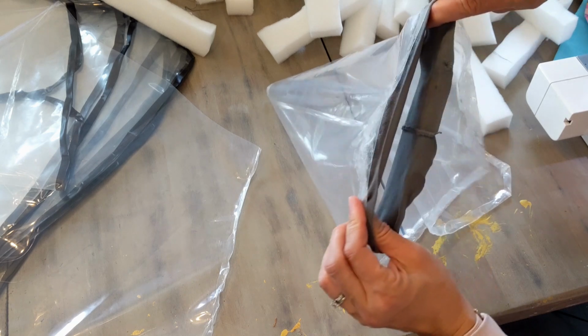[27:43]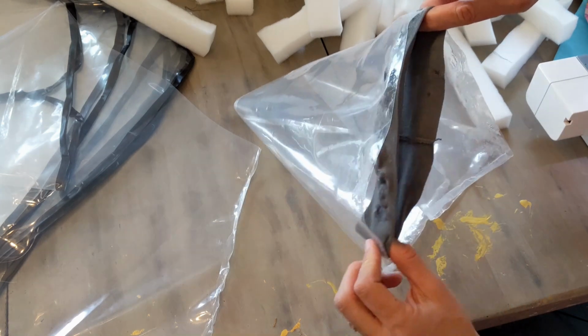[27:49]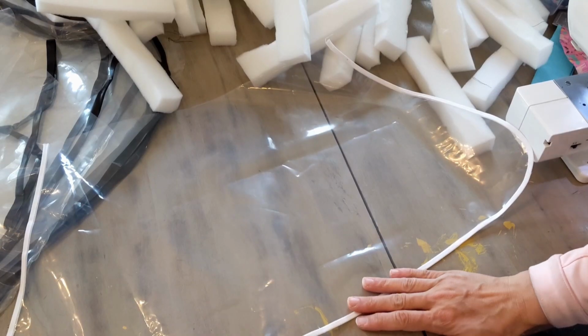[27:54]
Another idea I had that was a total fail was trying to glue the headband to the shield. That did not work at all. I tried 2 different kinds of super glue or very strong adhesive. I stretched my headband around a container so it was fully stretched out and tried to glue. And basically it got very hot, very stinky, and it didn't stick. So I don't know if you have another glue idea because it is hard to sew fabric to plastic. So if you have an idea about something that might work better, that would be great, but this was a big stinky fail.
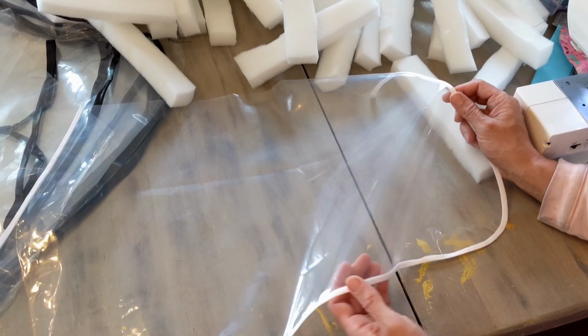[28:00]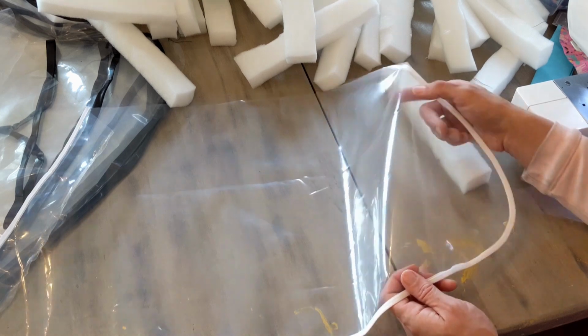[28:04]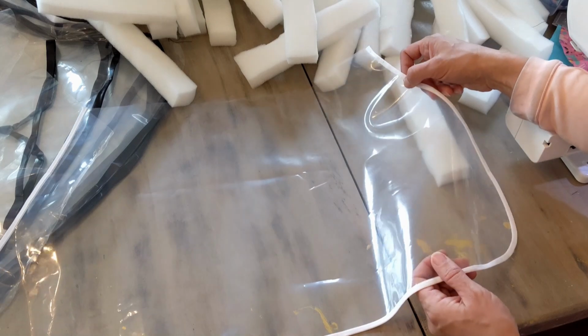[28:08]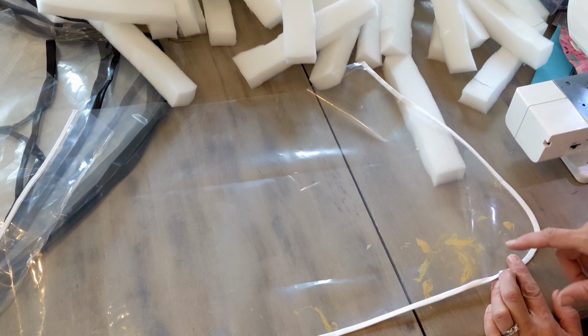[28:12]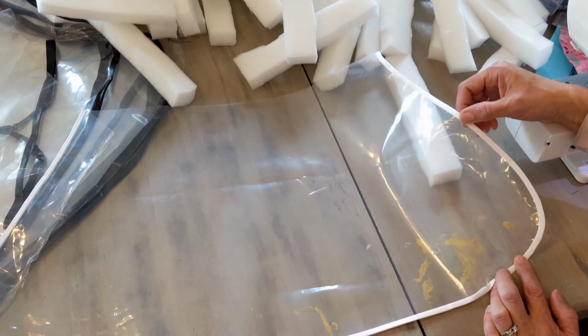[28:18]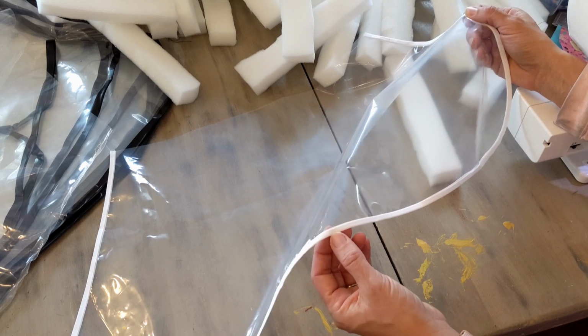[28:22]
Another idea I had for these, which I wouldn't call a total fail, was to actually just sew regular bias tape on this. So this is a cotton material that I have sewn around the edges of this. It worked beautifully. The sewing was very easy on it. But if these have to get reused, what I'm thinking they're going to have to do is put some sort of cleaning solution on it, dry it, and then reuse it. If you're doing that and you have cotton mixed with your vinyl, I think this cotton material could kind of serve as a fomite and actually hold some wetness and hold some germs in it.
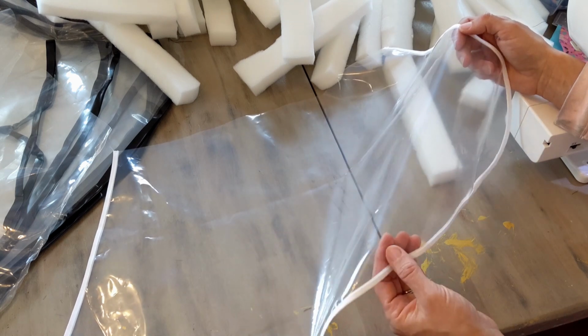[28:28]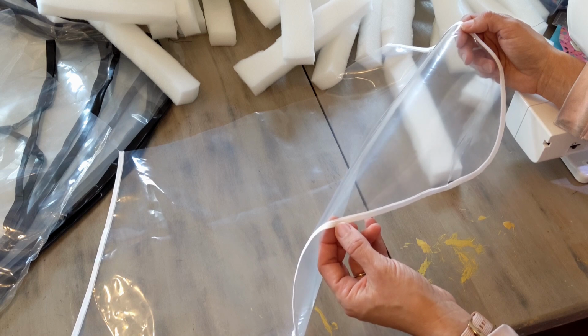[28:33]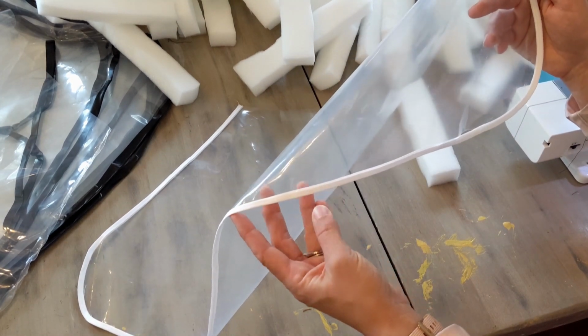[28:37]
And you probably don't want to be putting it back on your face when there's some wet cotton that could have potential droplets in it. So I like how this looks, I like how it feels, but I think it's a bad idea for infection control. One more mistake I wanted to show you was
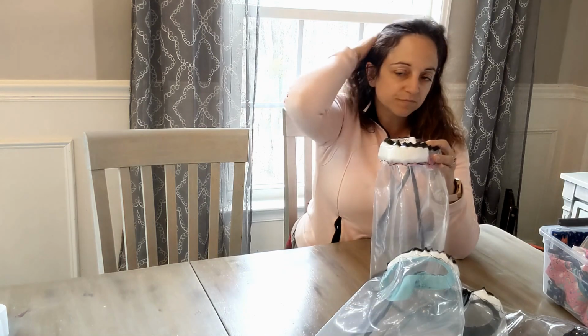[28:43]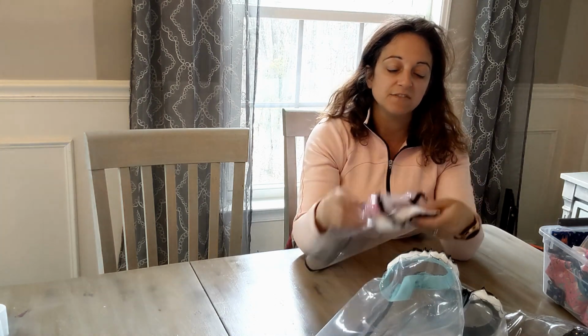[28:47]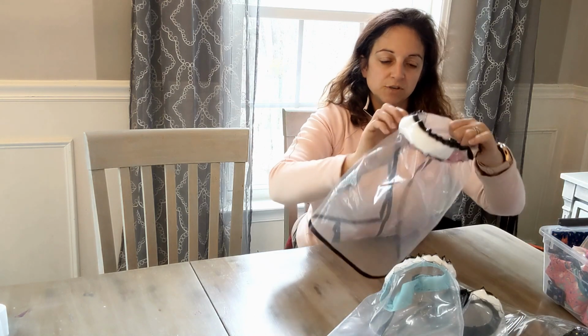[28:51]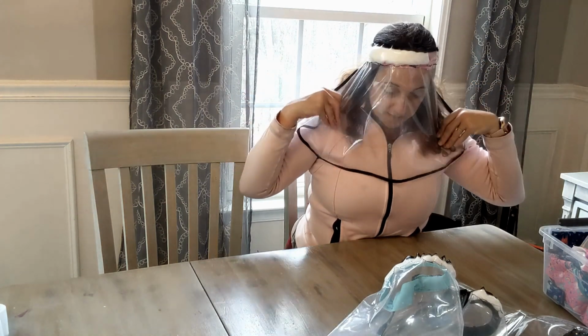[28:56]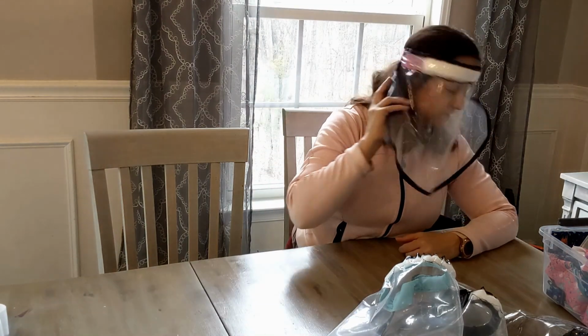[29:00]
that I had the idea of seeing if I could sew the bottom and then stuff the foam in. That was a terrible idea. I just want to show you what happened there. So, I thought I was getting the foam in the middle, and instead it's off to one side.
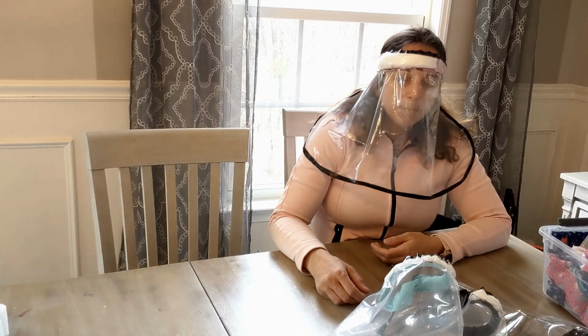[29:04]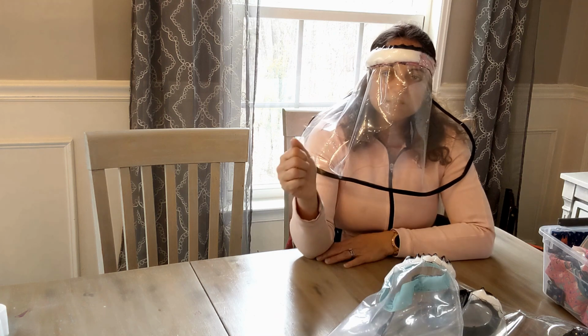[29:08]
Not so comfortable. I mean, I would still wear this in a crisis, but it's much better if you put the foam in and then fold over and sew as you go. Don't try to stuff the foam in after you've made your little tunnel.
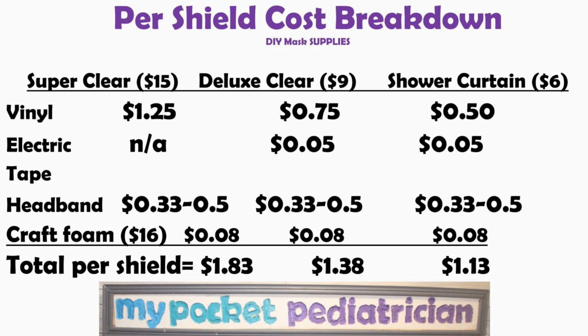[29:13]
Now what I tried to do here was break down the per shield cost for you so you can decide which one you're going to go with. I do think if I had the choice, I would do the super clear vinyl because even though it's $1.25 for the vinyl, you save about 10 minutes and not having to put that binding on, and I think it's a better quality product. If I were on the front lines right now, that's what I would want to wear.
The headbands were a great deal at the dollar store. I did check them out at Walmart, and they range from $1 to $2 per headband there, so I would definitely try to get them from the dollar store if you can. And then the craft foam I was able to get at Walmart, and that was very cheap. The cost is only pennies.
So if you go for the super clear vinyl, you're going to be at about $1.83 per mask. The deluxe clear is about $1.38, and the shower curtain, if you can get it for $6 like I did, then that would be $1.13. Again, that's an unusual deal, so I would expect the shower curtains would probably cost about the same as the deluxe clear, and if you had the choice between the two, I would go for the deluxe clear.
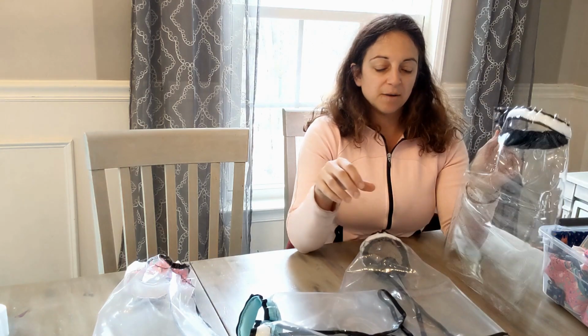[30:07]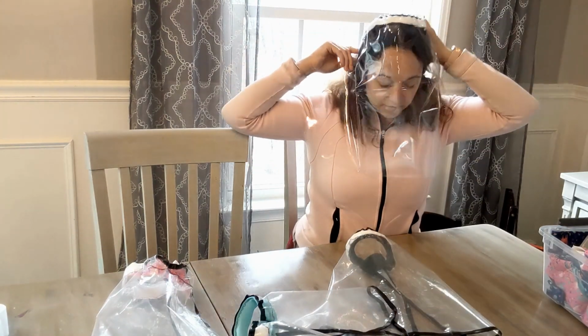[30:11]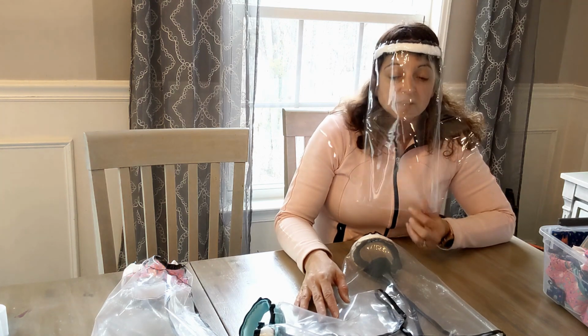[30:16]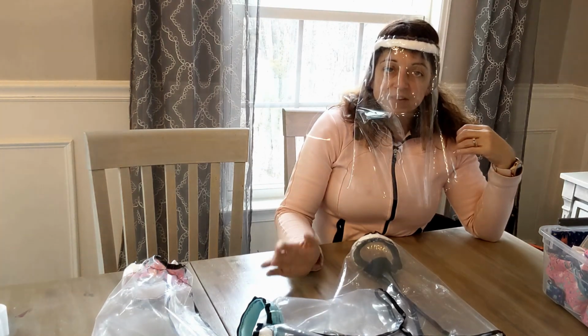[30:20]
Okay, so here are some of our options. This is the heavy duty super clear. If I had to go to work today and I had to choose one of these, I would definitely choose this one. There's a couple reasons for that. One, it's very clear. I can see absolutely everything. Way better than the shower curtain one.
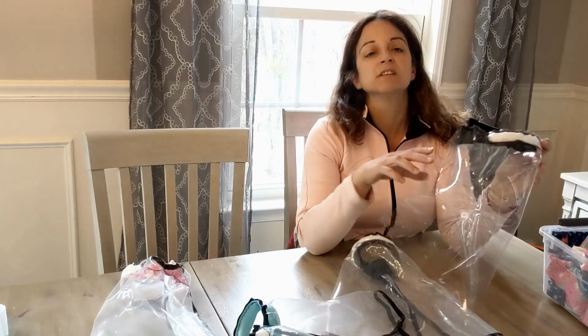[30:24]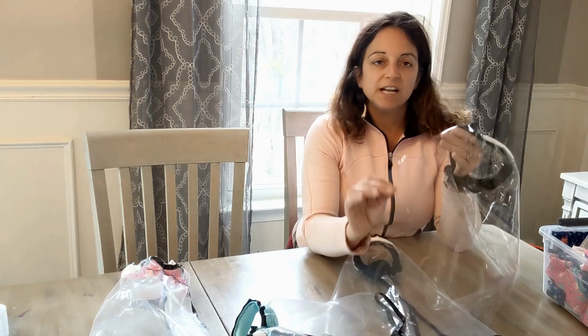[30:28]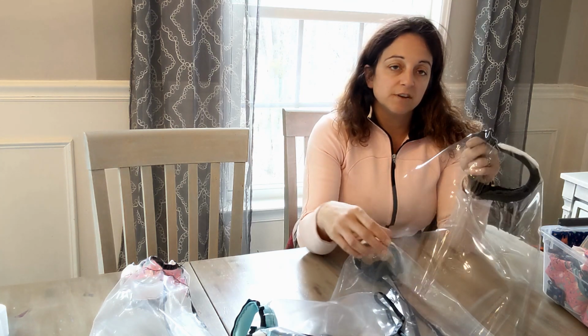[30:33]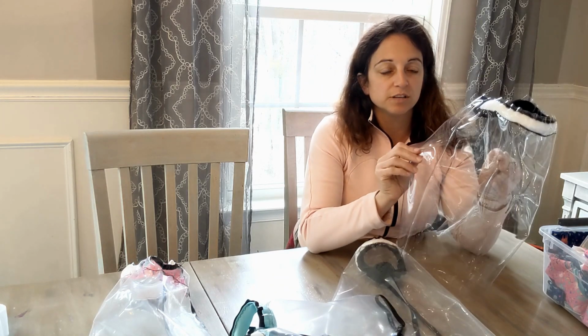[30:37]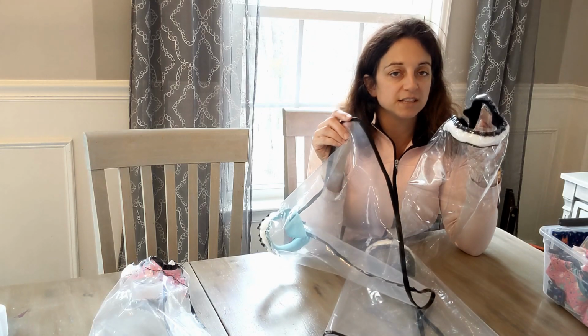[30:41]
Also, I don't have to worry about anything with the edges because the edges are so smooth. They're thick. I don't feel like this is going to fall apart. So if you have a choice in materials, I would definitely choose the super clear. Also, it's going to take me a lot less time to make this one because I don't have to spend all that time ironing the tape on this one.
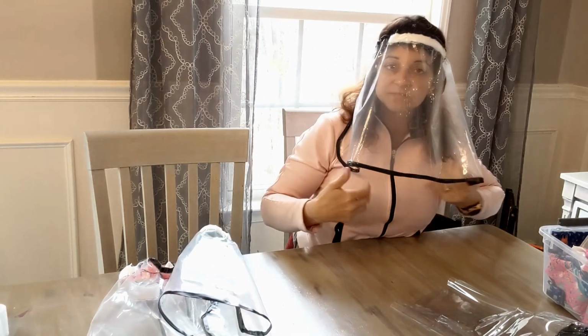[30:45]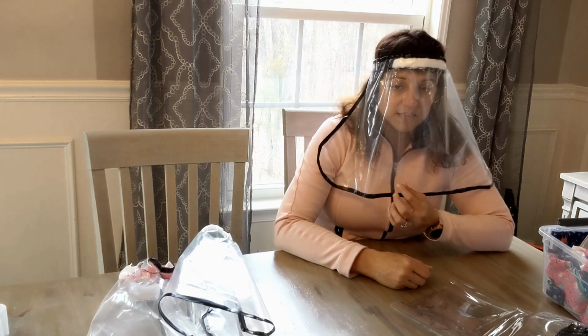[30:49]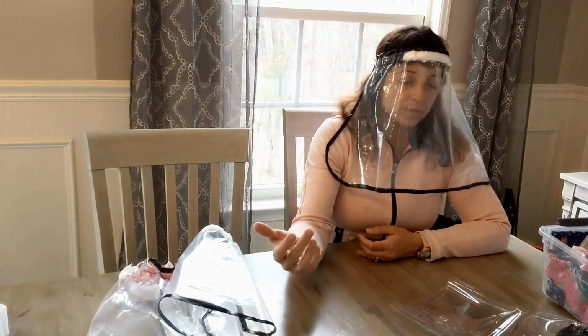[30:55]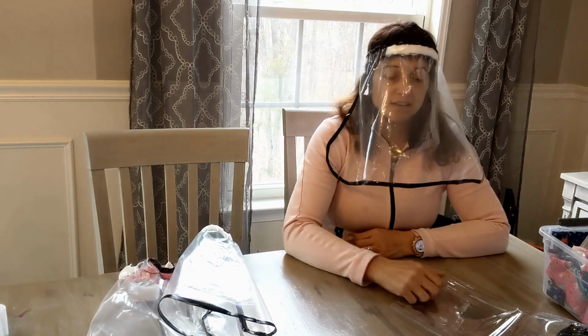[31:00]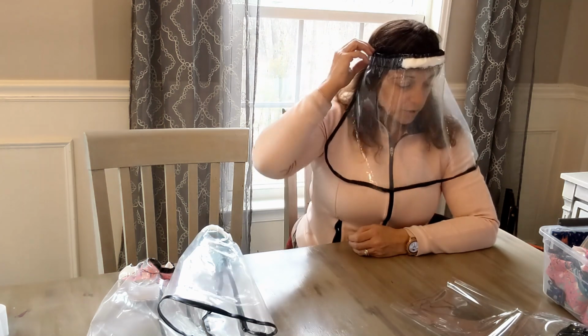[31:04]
This is the standard shower curtain one. It's fine. I still feel like I would rather have this than nothing because I feel like my face is going to be protected from droplets. It's comfortable. It's easy to wear. I will have to be a little more careful when cleaning the edges and make sure that nothing gets in there. But this is a very good cost-efficient option. A little more time to make, but I would feel pretty good wearing that.